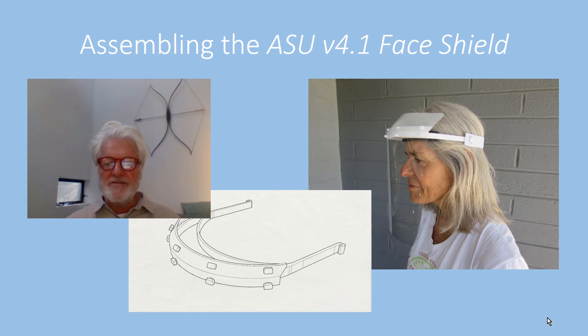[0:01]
I want to share with you the design for a novel face shield that we've been developing in the face of the COVID-19 pandemic. As you can see from this initial slide, we have some features that allow for a covering, a cowling that covers the gap between the headband proper and the area that holds the face shield. So here you can see a second piece of plastic that is actually snapped into place that protects the health worker from any sort of aerosols or splatter that might come in over the top of the shield. This is based on feedback we've received from local healthcare providers and hospitals.
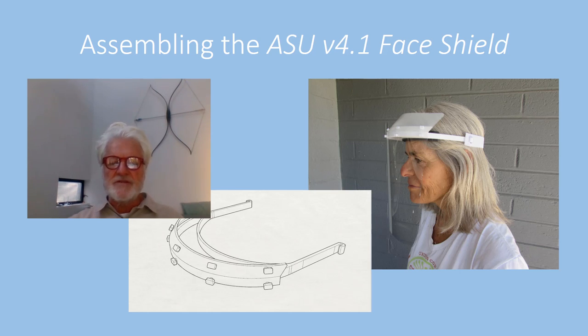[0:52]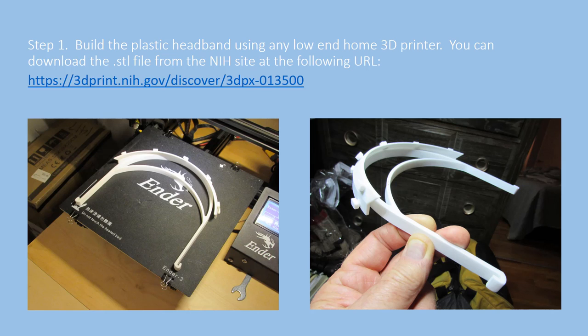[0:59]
So I've got a series of slides here I'd like to run through and share our assembly process. Here you see a standard 3D home printer. This is a printer called an Ender 3 that was purchased for less than $200 for the whole printer. And a roll of the simplest material to use, PLA, polylactic acid, can be purchased for less than $20 a reel. Each reel weighs about a kilogram, which translates to 2.2 pounds. And from that single reel, somewhere between 23 and 25 of these, depending on your settings, headbands can be produced in PLA plastic.
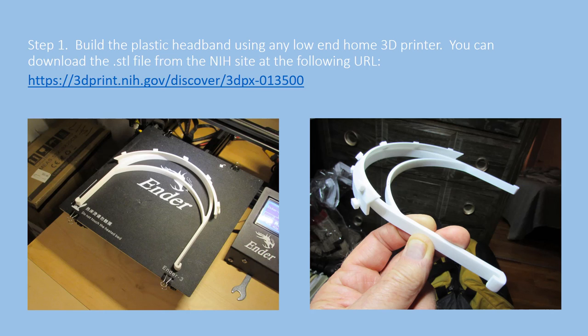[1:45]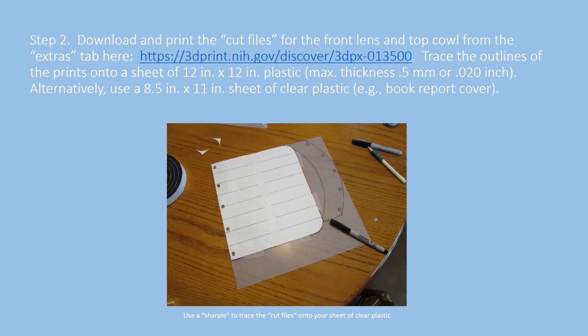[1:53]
This is the support for the lens and the cowling for the face shield proper. Here you see a sheet of PETG plastic, still with its protective film. That's why it looks opaque. And the files that we've produced for making simple traces onto the plastic can be downloaded from the nationalinstituteofhealth.gov site. I've just used a Sharpie and traced out the outlines of these two pieces that are cut out of the plastic.
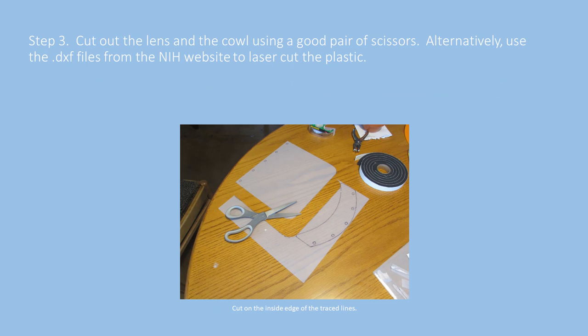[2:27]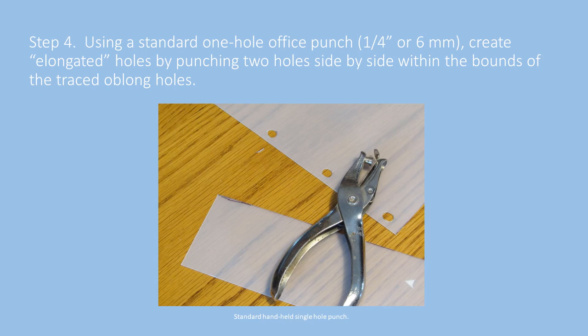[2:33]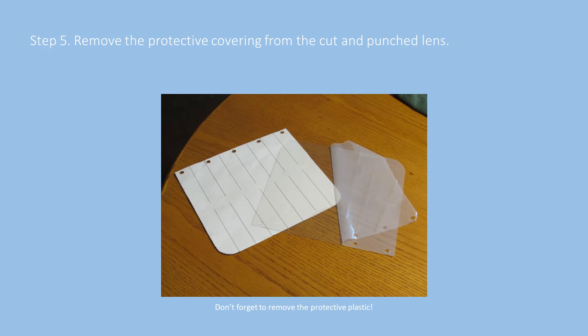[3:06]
So here we are cutting it out with a simple pair of scissors and subsequently punching these holes such that they will snap over the tangs on the headband assembly that was 3D printed. This handheld hole punch, just like you would find in almost any home office, has about a quarter inch diameter cutting surface. And so if you punch two holes side by side, you'll get an elongated hole that fits perfectly over the tang. This slide just simply shows that the material is actually covered with a protective film front and back. And some people can't believe that they bought plastic that was supposed to be clear, and in fact it came and it looks opaque. Well, make sure that you're removing the film from the plastic.
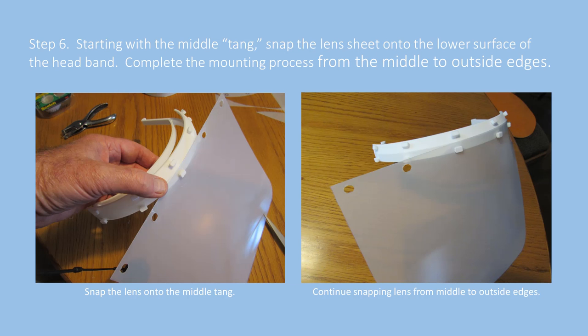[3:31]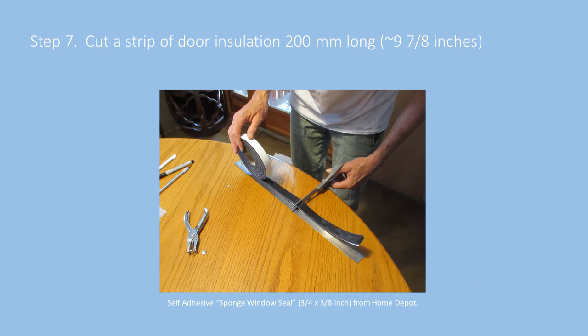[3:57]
Once you have the plastic cut out and punched, then you can snap the actual lens, starting from the middle hole and then moving across from middle to the outside. And that'll be the best way to actually get a stretch that's equivalent on either side, because it's quite a tight fit. Another step would be to cut a strip of door insulation, 200 millimeters long, and that gets affixed to the inside of the headband. You can see that here.
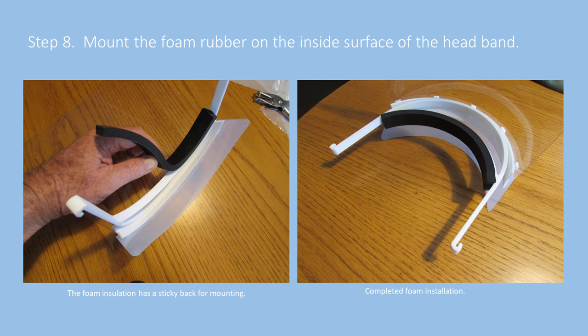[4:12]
And this door insulation is great. It's a closed cell PVC sponge tape. And in this case, we're just using something from Home Depot, 3/4 inch wide and 3/8 inch deep, and using its adhesive properties just to affix it to the inside of that headband. It sticks pretty well. You may want to have some secondary taping around that too, if it's really undergoing a lot of rubbing or abuse.
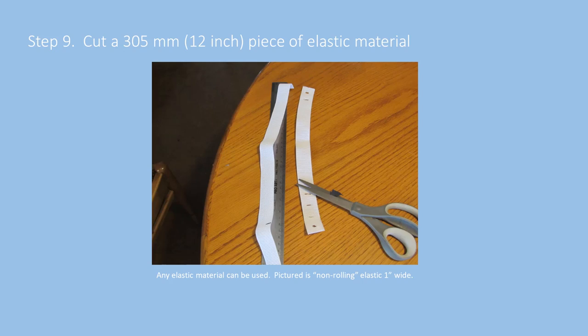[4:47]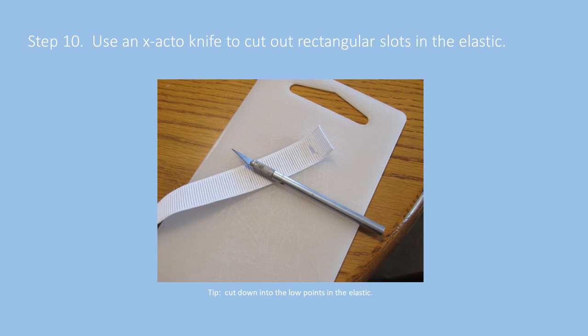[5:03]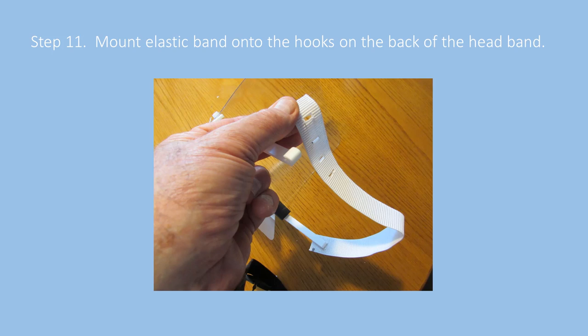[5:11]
Here's our solution for the elastic headband. It's about a 12-inch piece of elastic purchased at a fabric store. And then we have cut out slots in the elastic material to create an adjustable elastic strap. Here you see a series of punches that can give adjustments for different users, and those holes fit over the hooks in the back of the headband proper.
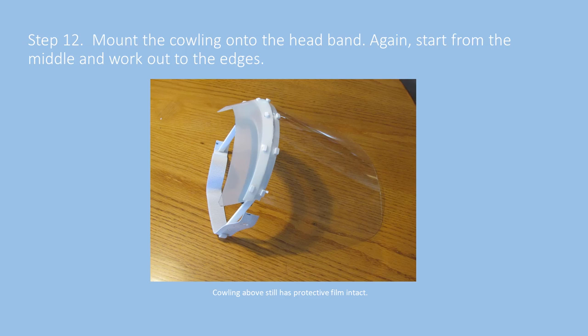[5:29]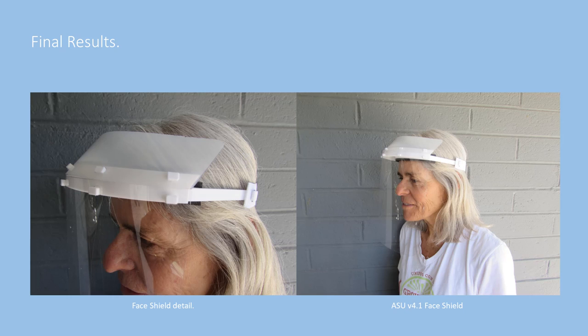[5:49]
Here's the finished face shield. The reason that this one, this cowling, is still opaque is that the film has not been removed, just for the purposes of distinguishing the two parts of the face shield assembly. Now here's the final results. You can see that we got really good visibility, comfort from this foam band, ease of adjustment with the elastic band, protection right up to where the hood or other kinds of garments, PPE garments, will come down and basically create a seal between the cowling and the top of the head.